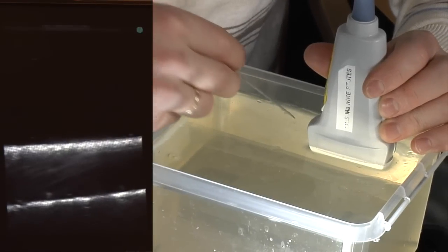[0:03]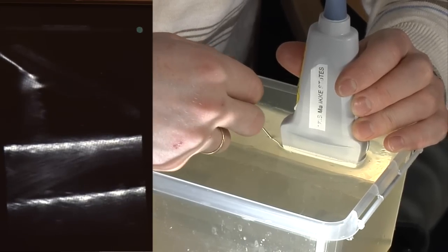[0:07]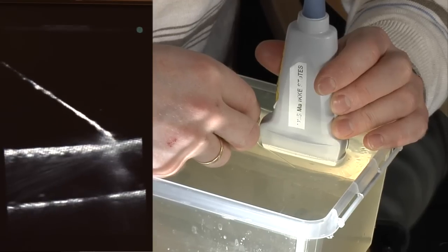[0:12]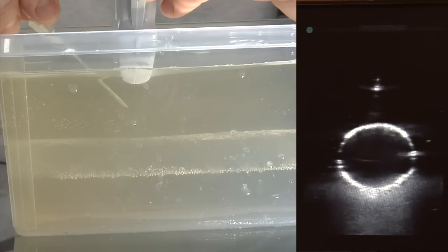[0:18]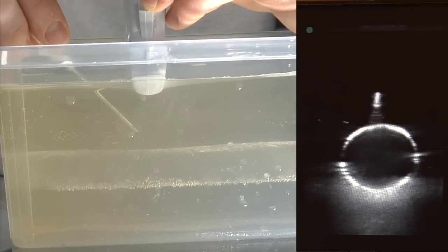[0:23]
The use of gelatine models in ultrasound-guided intravenous cannulation. Different commercial ultrasound training phantoms for vascular access exist. They offer realistic image characteristics, but the models are often expensive, not readily available, and their substance is patented. As a response to this, we have developed a homemade gelatine training model. This video will show you how to make your own model.
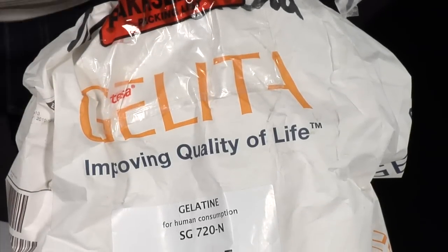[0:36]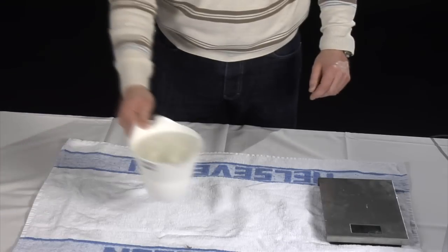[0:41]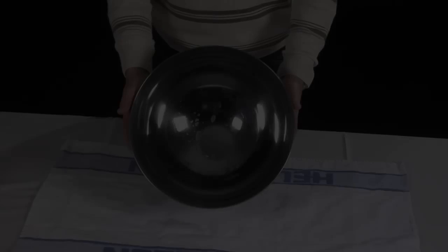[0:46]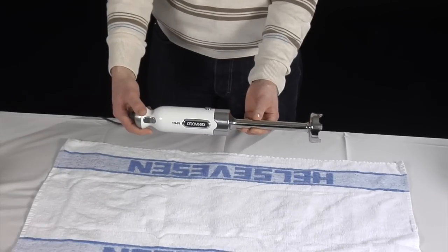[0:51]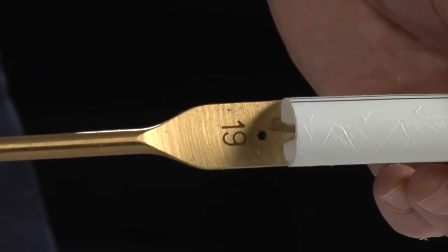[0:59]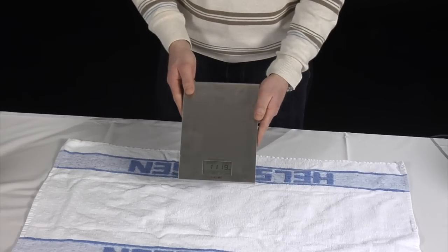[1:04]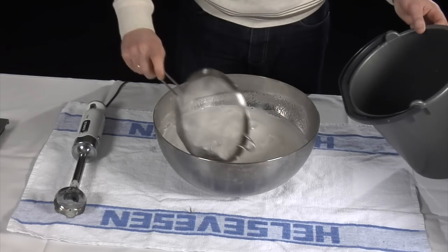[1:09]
Before you start, you will need the following ingredients: gelatine powder, hot tap water, and some kind of preservative. The equipment you need is one mixing bowl, one hand mixer, one measure cup, two plastic containers, two water pipes of different outer diameter, one drill, one cloth soaked in cooking oil, one weight, one spoon, and one sieve.
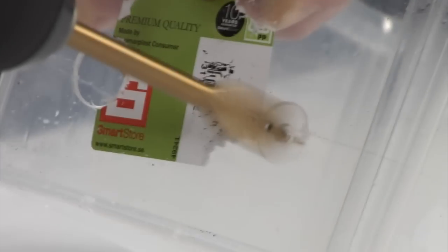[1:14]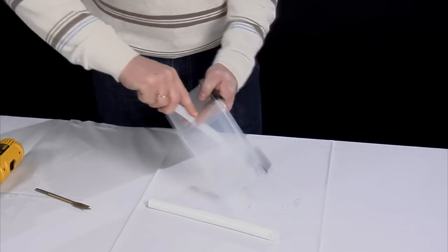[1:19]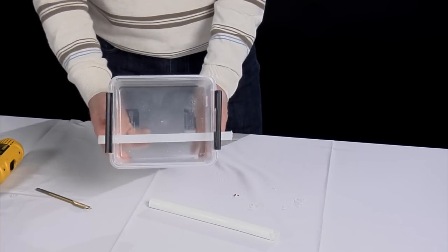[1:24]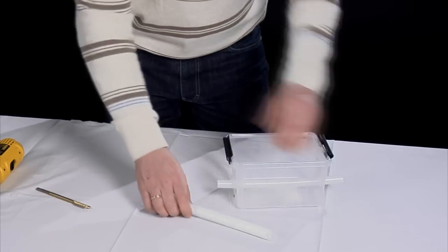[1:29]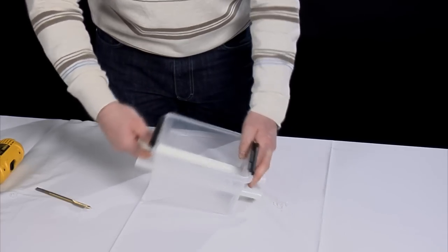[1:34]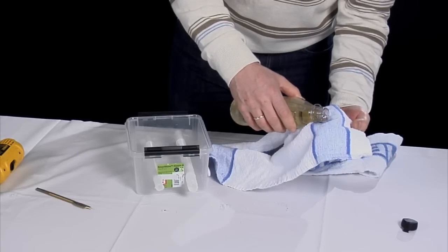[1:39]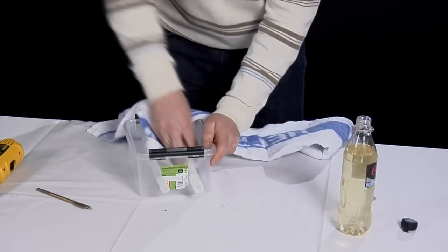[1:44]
You start by making a form for your gelatine liquid. To resemble venous vessels, we place two water pipes through the container from end to end. You can use drill bits of different diameter corresponding to the water pipes you use. Pipes with small diameter will give a good model for peripheral vessels, while a larger diameter will resemble more central venous structures. The pipes need to fit perfectly to make a good seal. To ease the later removal of the pipes, lubricate them with cooking oil.
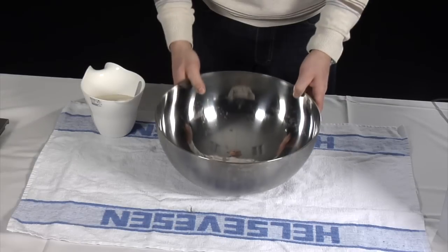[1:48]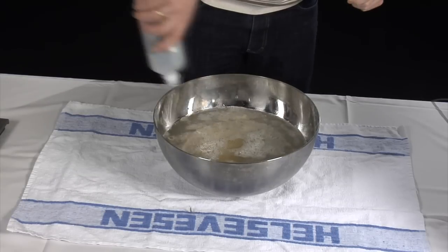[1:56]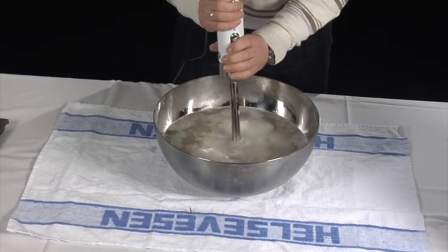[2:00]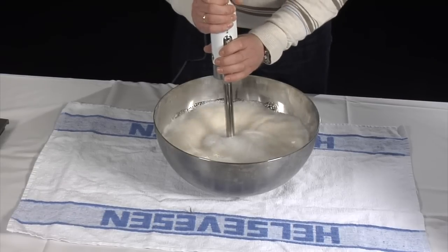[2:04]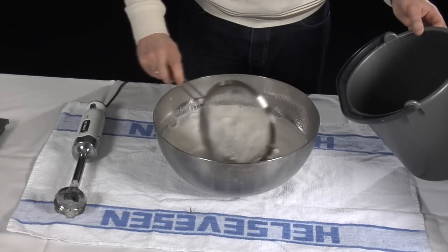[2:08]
Mix 300 g of gelatine powder, 1600 ml of water, and 100 ml of preservative in the mixing bowl. Use a hand mixer for about 1 to 2 minutes to ensure that all the powder dissolves. Remove air bubbles and debris from the surface.
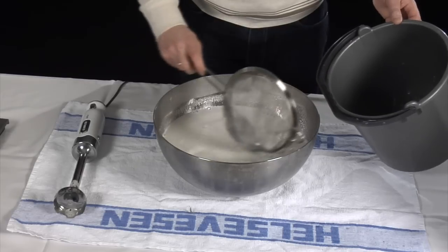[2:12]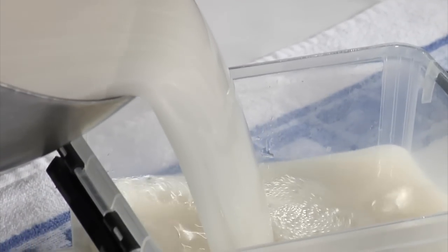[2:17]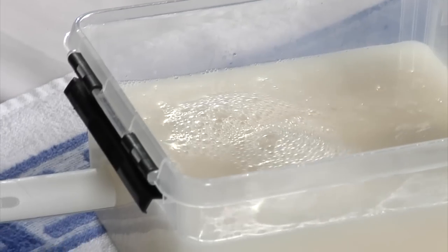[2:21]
The gelatine liquid is poured into the form and placed in a refrigerator or put outside in cold temperature. Within 1 hour, the liquid will harden. Additional debris and air bubbles should be removed from the surface before the model gets firm.
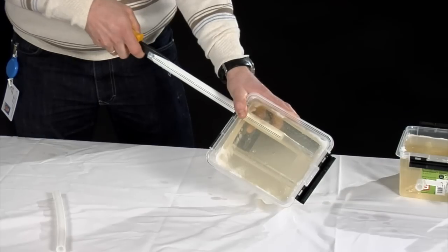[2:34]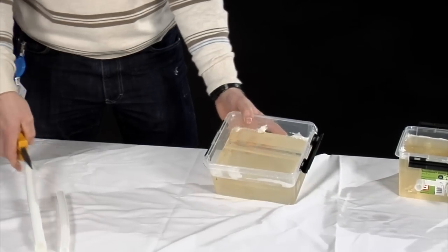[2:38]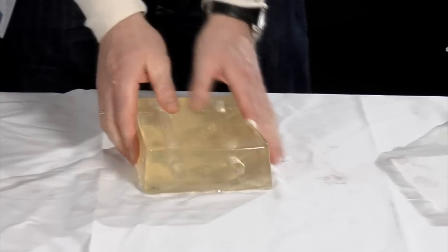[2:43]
Once the model is firm, remove the pipes. You now have a model with two air-filled tunnels resembling vessels.
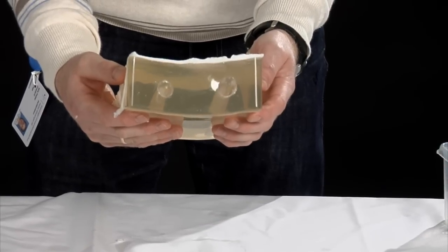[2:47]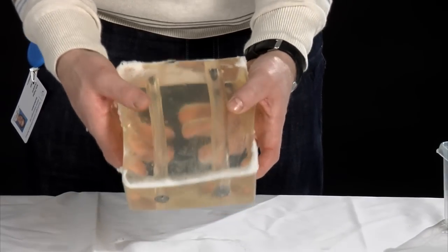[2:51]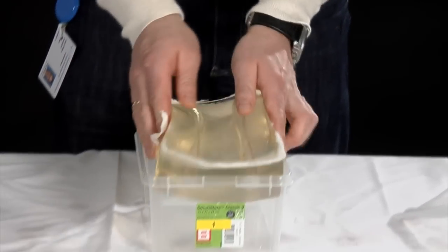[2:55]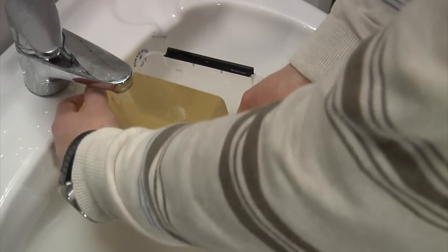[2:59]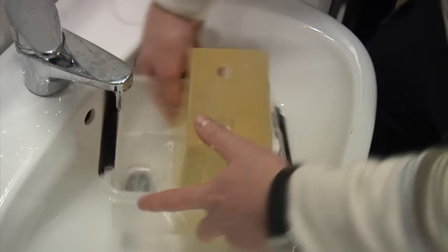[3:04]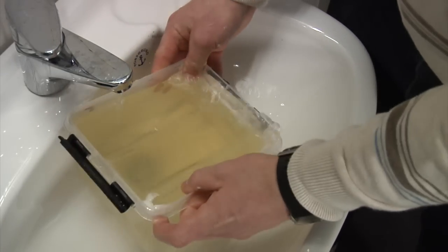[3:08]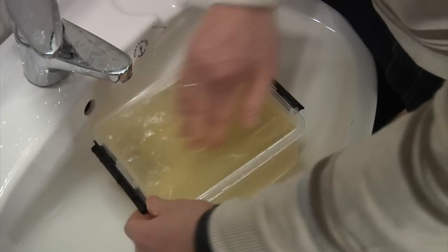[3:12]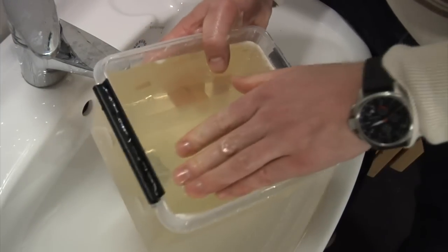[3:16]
Put the model in a new plastic container without holes in the ends. While in the container, fill the vessels with water. Remove excessive air within the vessels by tilting the container, squeeze air out, and refill until the vessel is full.
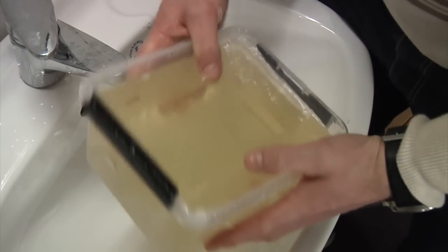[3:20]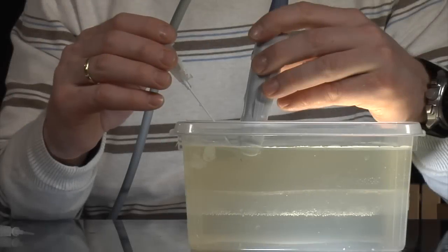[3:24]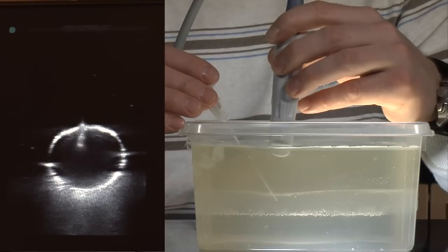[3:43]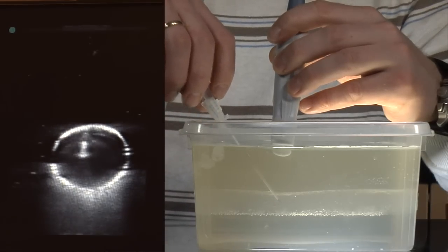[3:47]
The phantom is now ready to be used as a training model for ultrasound-guided intravenous cannulation. You can practice both your short-axis and long-axis techniques. One advantage for novel users of ultrasound is that the gelatine is transparent. You could therefore follow your needle tip on both the ultrasound screen and its actual position within the model.
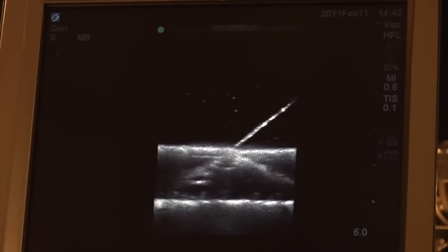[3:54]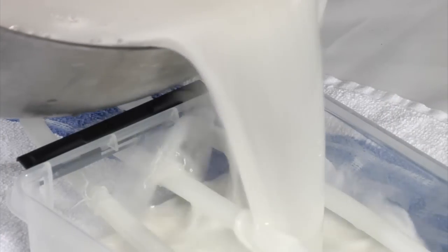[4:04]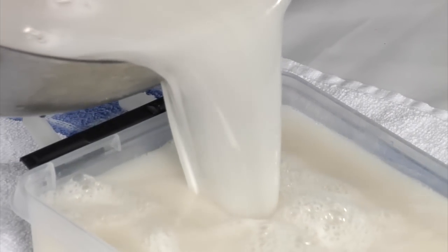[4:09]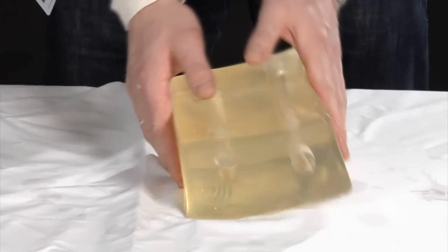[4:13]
Each model can be punctured multiple times. When too many needle tracks change the appearance of the gelatine structure, you could put the container in the microwave for 1 to 2 minutes. The gelatine will then melt and become liquid, and could be reused for new models. Once firm and placed in a refrigerator, the gelatine model is good for up to 2 to 3 weeks.